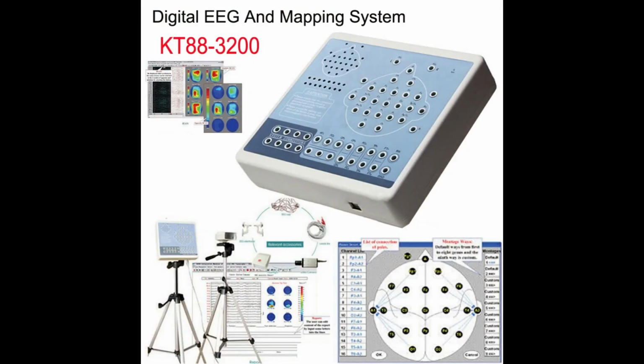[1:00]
This short clip isn't some bizarre computer-generated image, but rather an extraction from a short recording of brain signals. The actual length is extended to demonstrate the detail of these recordings, but the core material remains the same. About 10 seconds of data, gathered non-invasively in contact with the scalp, are sent through a program for data processing, and the result is an approximation of what I'm visualizing. In effect, you are seeing a screen recording from my mind's eye.
Brain-computer interfacing is rapidly becoming a staple in our age, not just as a sci-fi concept. Brain-computer interfacing can be summarized as any non-analog interaction between a computer and one's own mind, typically to solve an existing problem. In this case, it is the processing of an image from the mind into a digital image, which can be shared with others.
The system starts with data acquisition. This is performed through a medical EEG device, namely a KT88-3200. From this, I used 19 data channels as well as a ground and reference electrode.
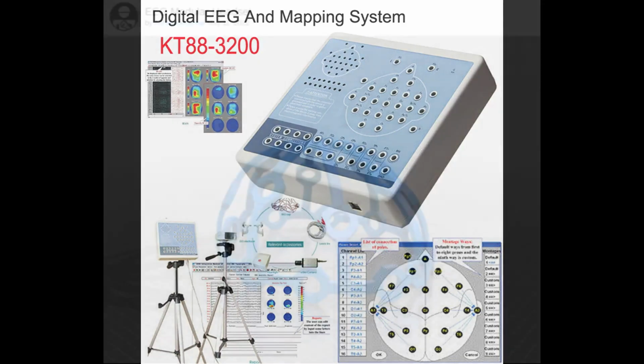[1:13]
These electrodes are held in place using a 3D printed helmet, using a design off of Thingiverse, project file linked in the description, and an adapter of my own design to fit the product I am using with the modular holes. Unfortunately, the helmet becomes a little tight with these adapters, so it is best to pop the back of the helmet so your head can fit. I will likely revise some parts in this design myself, so it works better with these adapters, though, if you would like, I suggest extending the arms at the back piece about 1.5 inches on each side.
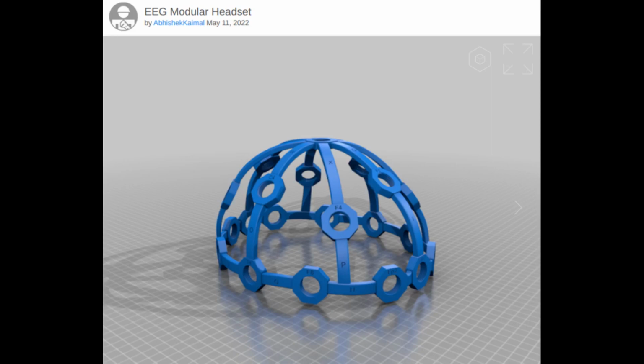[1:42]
Placement of electrodes references the International 10-20 system, the standard for electrode placement, which is typically used for medical screening and diagnosis, though in truth you could likely get away with less constrained placement if you were to record all the data yourself. I will likely be revising placement myself based on findings towards the end of this project.
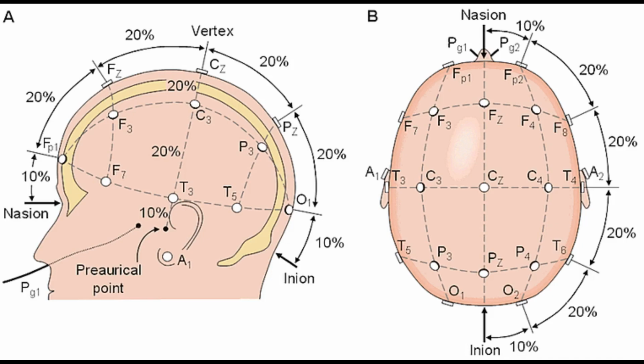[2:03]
On the software end, the technology is largely focused on machine learning to find what data in the signal is relevant to the desired data form. It's a boiling down of the contents before forcing them into the desired form. The subject closes their eyes and holds a target image in their head.
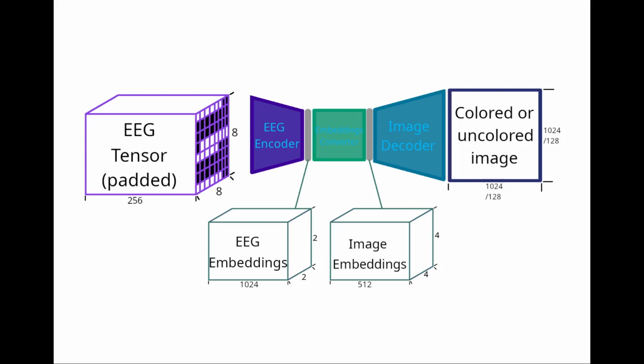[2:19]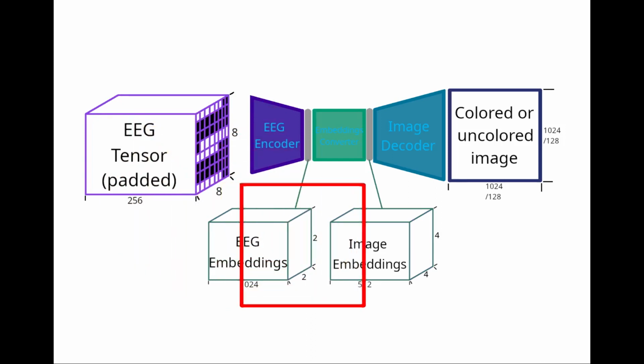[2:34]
The recording is taken, and 512 lines of 19 channels are taken through the system and padded. The data is reduced from a state of 8x8 by 256 down to 2x2 by 1024, then further reorganized for the purpose of representing the data in the form of an image embedding in the size of 4x4 by 512, then finally fed to an image decoder, which represents the data as a 1024 by 1024 3-channel RGB image, or alternatively a 128 by 128 by 1-channel black and white image, depending on the decoder used.
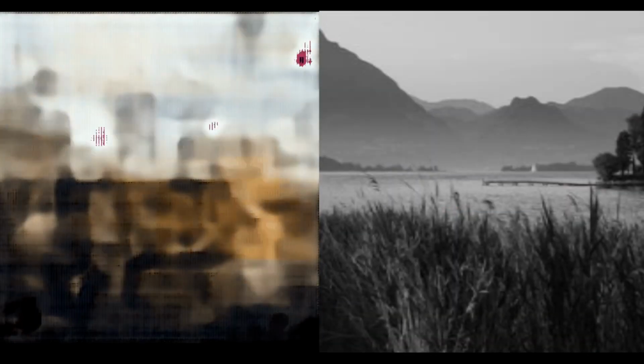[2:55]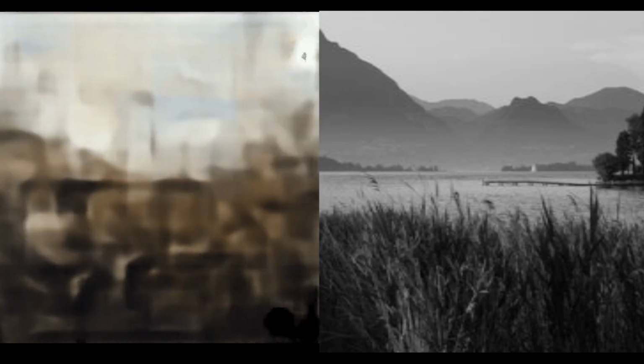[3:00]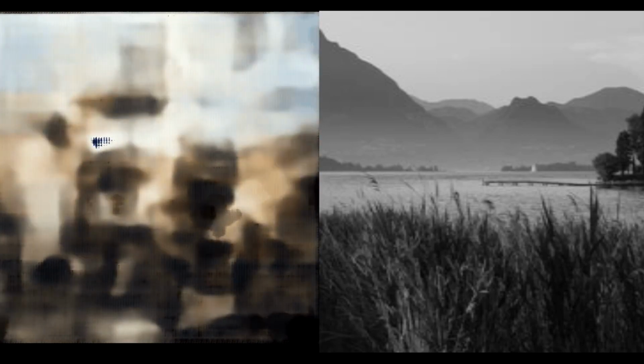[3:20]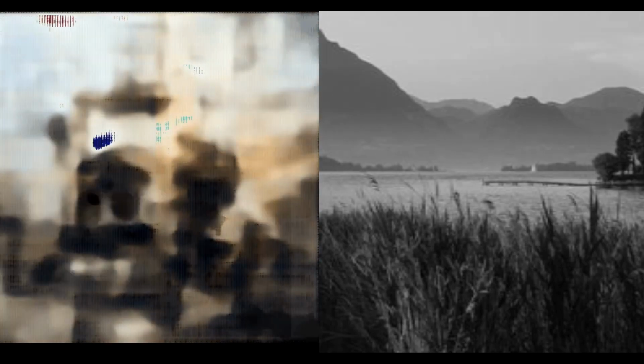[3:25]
Before any data could be extracted, the first major hurdle presented itself. Though there was a proprietary software, and though it could be extracted into a file which holds the data, the software was first and foremost incredibly slow, and the data output was in the form of XDF, or Extensible Data Format, a defunct but apparently still on occasion used data format, which is typically used for n-dimensional arrays. Using the data is possible here, but in the long run I knew that the ability to cast the data directly and have control over its recording was necessary for the project.
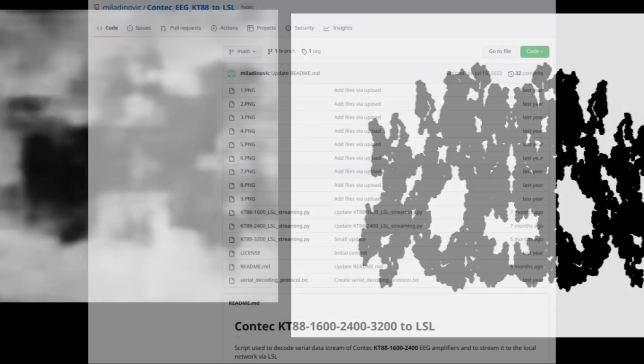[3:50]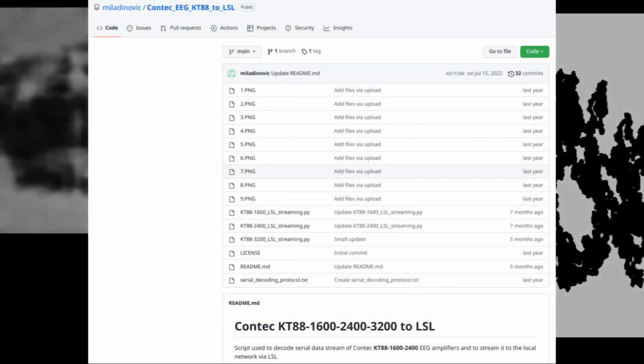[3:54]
So for the first few days I focused on pulling data directly from the device with a custom script. Ultimately, however, the much needed solution was already conducted before me, as this being the cheapest EEG device on the market, someone already hacked the device before me and I was able to use the script as reference for building mine. The reference script is the Lab Streaming Layer compatibility tool by a certain Alexander Miladinovic. His project will also be found in the description.
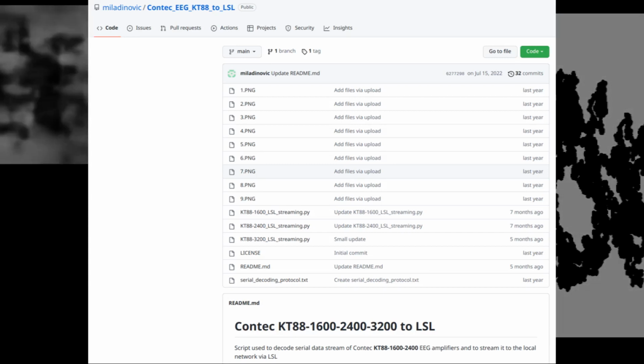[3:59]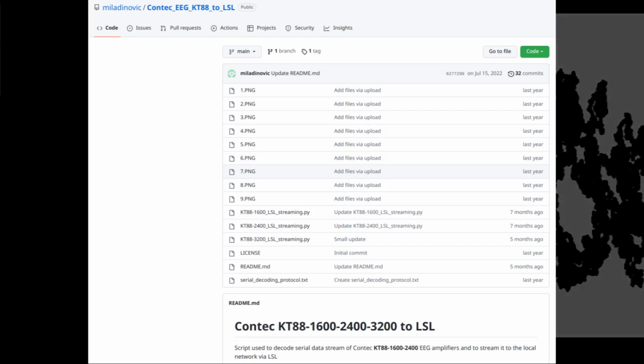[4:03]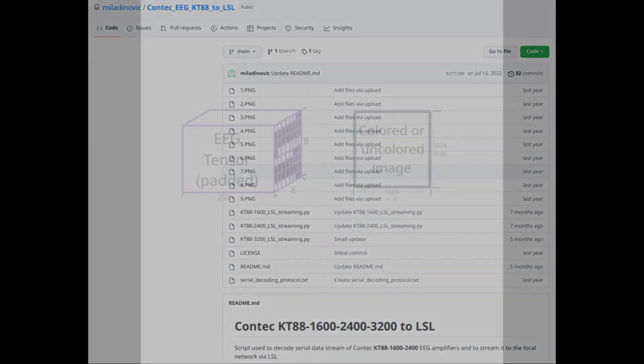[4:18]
The major barrier his work got around is that he found the byte encoding for each channel and identified the subsequent commands that are uploaded to the device, which operate as a serial connection. The company itself kept its trade secret, to my knowledge, so kudos to him for besting the thing. Once able to pull the data, it became entirely my own work in processing it.
Data processing is done first by making recordings for reference later. A major hiccup in the early stabs at this wasn't how I was processing the data, but how I was recording it. I was initially using a Windows PC and had to go away for a bit, but wished to continue, so I got the same script saved to my laptop, and to my utter shock, I went from sampling 10 samples per second to 200 samples per second, which was a huge boon for my purposes.
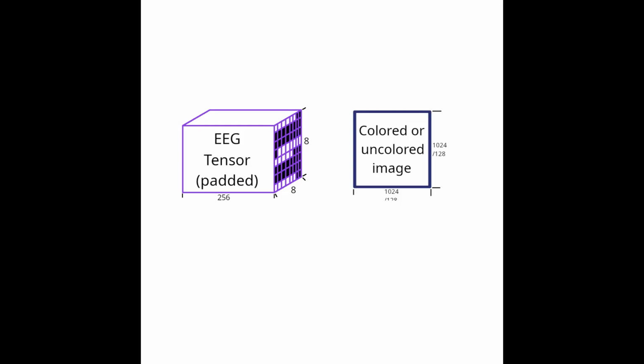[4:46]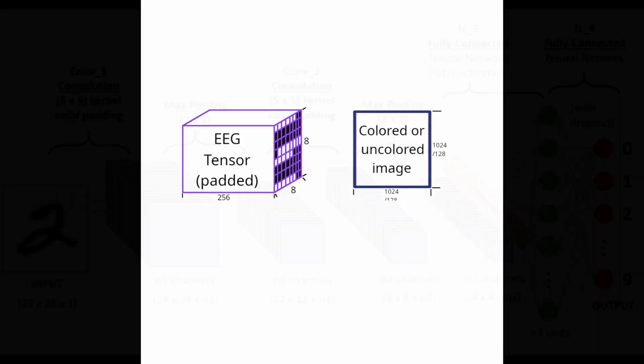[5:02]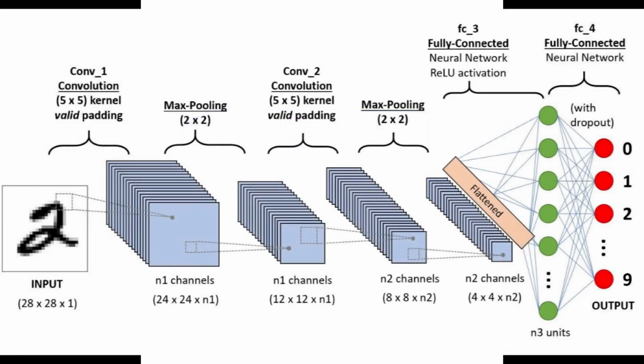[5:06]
For early managing of data, a mean is applied every 2 samples. From here we can lay out the major theory. In a large sampling of rippling at the surface of the brain lies information of visualized images, and there is such a way to link this data to a target image.
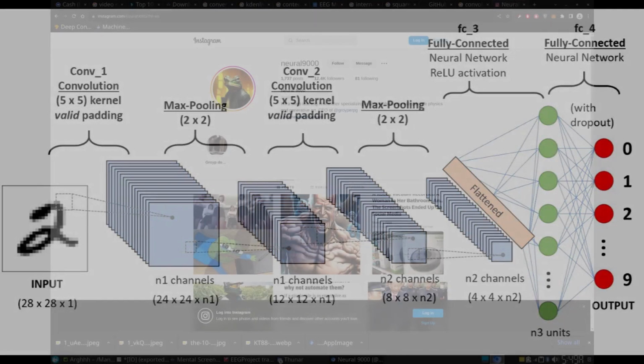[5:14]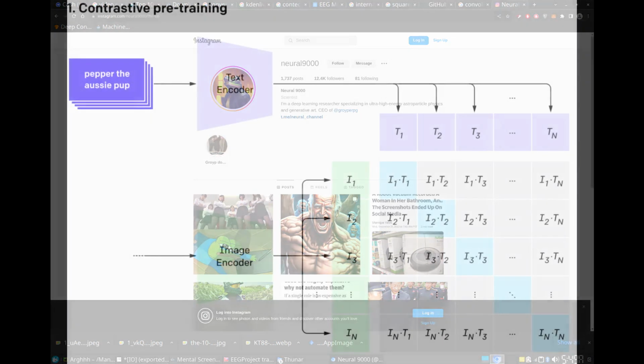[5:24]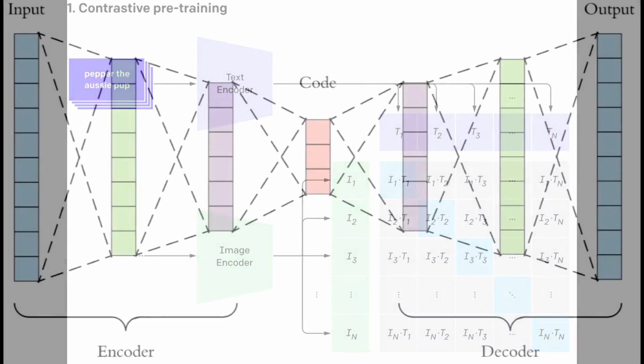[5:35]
My initial step was to take a generative convolutional neural network directly from the data form to the target image. This was less than ideal and gave little but dark blobs on the screen. I had been searching for a breakthrough when I reached out to a page on Instagram, which works on neural networks professionally, for a new perspective, and he put me on the path of instead reducing it down to CLIP embeddings, then using a GAN to reproduce it. While dabbling with that and reading the related papers, I happened upon the breakthrough I needed: autoencoders.
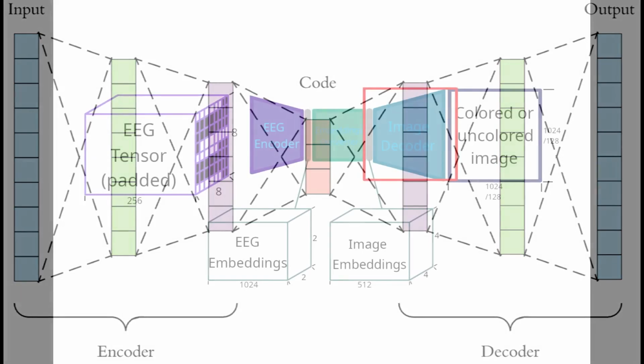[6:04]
Embeddings are, in their essence, a compressed data form, which can be understood by a machine with the right decoding method. Thus, the starting point is autoencoders, a type of convolutional neural network which takes the form of an encoder, which takes the data form and reduces it down to a smaller form called a bottleneck, then the decoder, which takes these embeddings and reproduces the original form. Thus, you have part of the model that will in the end reproduce an image already, the image decoder, which takes a small heap of data and reproduces an image from it, building on a dataset of only unpaired images.
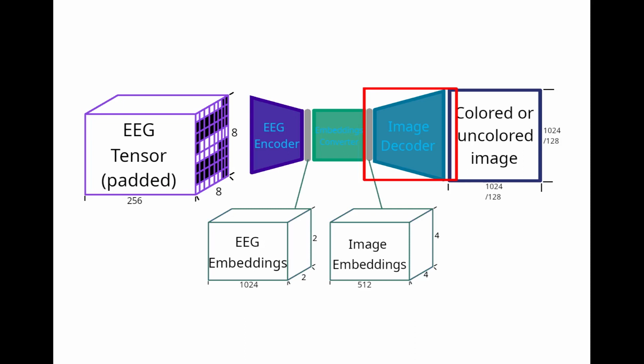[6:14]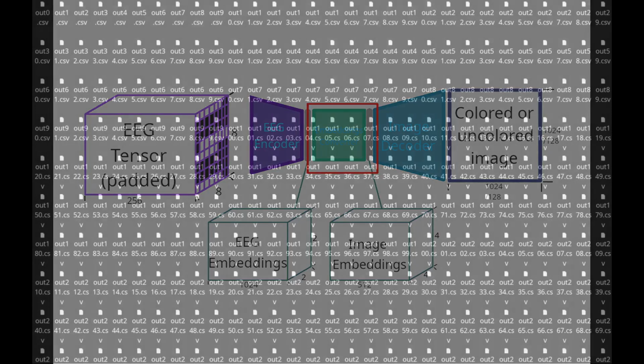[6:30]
The next stage is to do the same with EEG data, a model which reduces it, then reassembles it, then a means of going from the form of one embedding to another, which is the model that can be much smaller and more manageable with a limited dataset. For this, I recorded about 1.667 hours of unpaired EEG data, which I was simply freeform visualizing without a target. From there, I recorded a total of 4.1667 hours of targeted visualization data, where I was given a prompt image, then closed my eyes and held the image in my head. This was used to train the last model, which went from embeddings to embeddings.
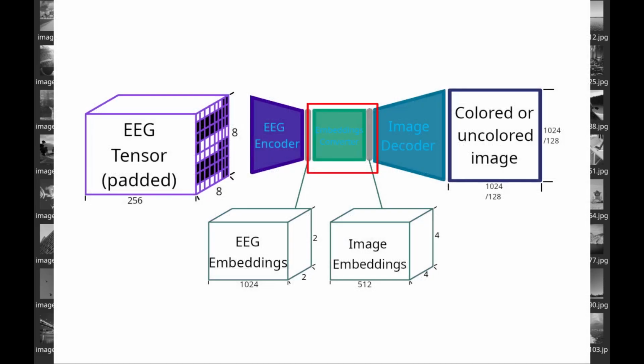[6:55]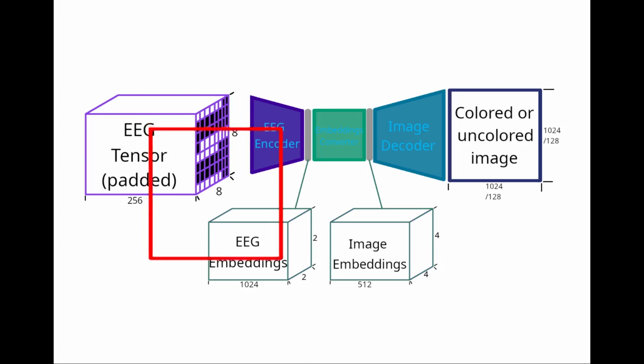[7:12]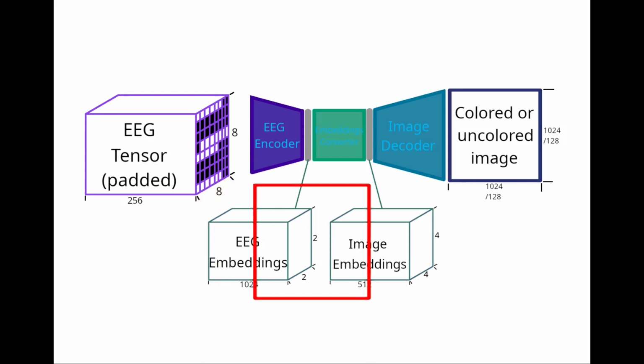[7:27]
The EEG encoder was trained for 20 cycles through the whole data set with the input data from 512 samples, or about 2.5 seconds, of 19 channels, which is then padded into an 8x8 by 256 data form with 2 samples in each 8x8 patch, then convoluted down to 2x2 by 1024, reducing from 9,728 data points to 4096. The image decoder moves from 4x4 by 512 data form, so it is needed in the embedding converter to convolute transpose up to that form.
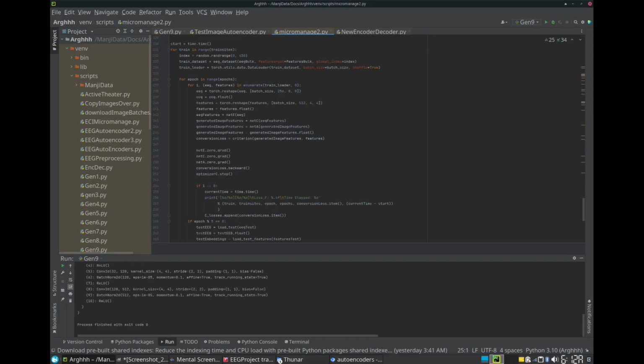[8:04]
Thus, we define the embedding converter as a neural network which takes an input data form of 2x2 by 1024 size, sizes it up to 4x4 by 2048, then implements a hidden layer which sizes it up once more in order to manage all of the connections needed to go from one embedding to the other. Thus, the input is the EEG embeddings, taken by feeding the EEG data to a frozen EEG encoder, taking that and passing it to the embeddings converter, then comparing it to the image embeddings, which we pre-save using the image encoder. From here, the next training script is defined.
What we want is to train both the EEG encoder and the embeddings converter beyond just the baseline. We want the encoder to favor data which corresponds to the image, rather than everything else which may be going on through the mind at the time. So the script trains the encoder and the embeddings converter to take the data from the EEG source all the way to the image embeddings.
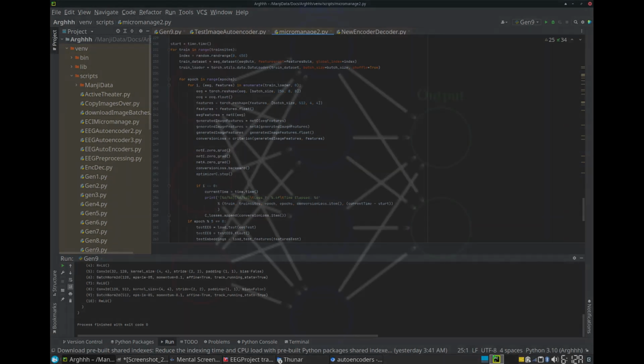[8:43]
One mistake I made early on was not using dropouts. The power of dropouts is that it convinces the network that it can't always trust nodes for data because it has a small chance it is set to 0 by default. So it instead forms an excess of connections both ways to compensate for its uncertainty.
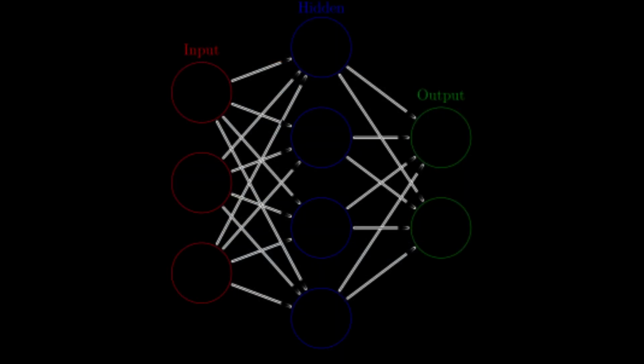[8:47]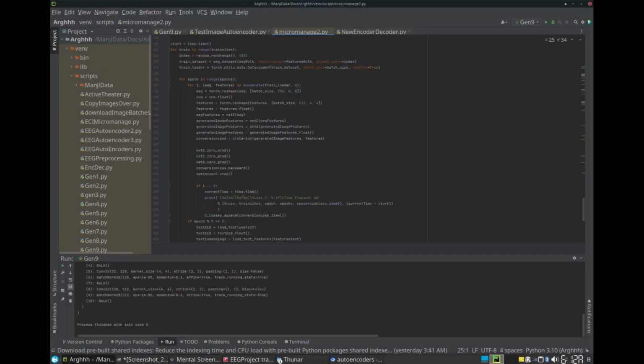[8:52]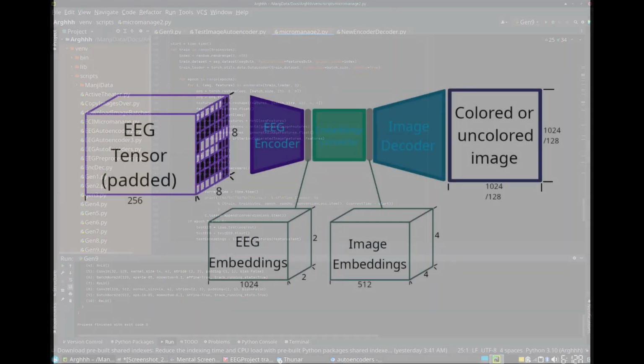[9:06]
The majority of the time training for the system was spent on the accurately named micromanage script, which was responsible for overseeing the filtering and structuring of data from start to finish, and by the time of recording, it had been run for 100 cycles through the data. The data can then be taken from start to finish by first sending it through the EEG encoder, then the embeddings converter, and finally the image decoder, which I made both a 128 by 128 monochromatic form and a 1024 by 1024 RGB form, both using the same embeddings.
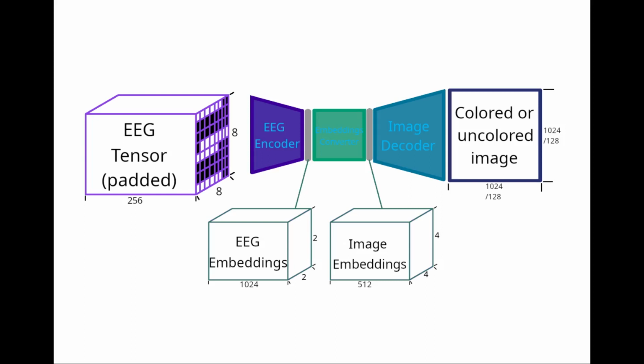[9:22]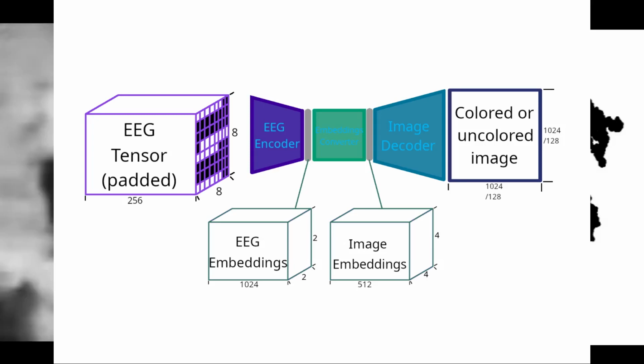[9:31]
The 128 by 128 monochromatic favors speed and is less prone to lessons on the images, but the RGB decoder grants a lot clearer images most of the time. So this whole project was a headache and a half, and I likely neared losing my mind a few times during the investment into it.
So the natural question is, why? What use is a machine that can see what you visualize? Well, there are several applications which present themselves, aside from being fascinated with the work of the psychologist Jung and his concept of active imagining, which could be recorded with a more refined form of the system. It also acts as a form of media creation, or simply quick rendering of references for art.
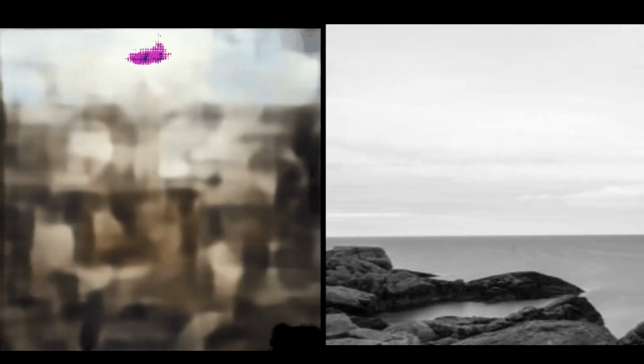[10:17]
But in truth, my interest lies a little deeper than that. As those from my Instagram page, total_desolation, well know, I have a bit of a fascination with recording dreams in the form of written descriptions. This has never sat right with me, so I define the artist dilemma. One is made to watch and perceive a visionary world with the audience of one. The desire is to show others, tell them of this world, but no medium truly replicates it. So my goal in starting this project has truly been the pursuit of a device which will record dreams.
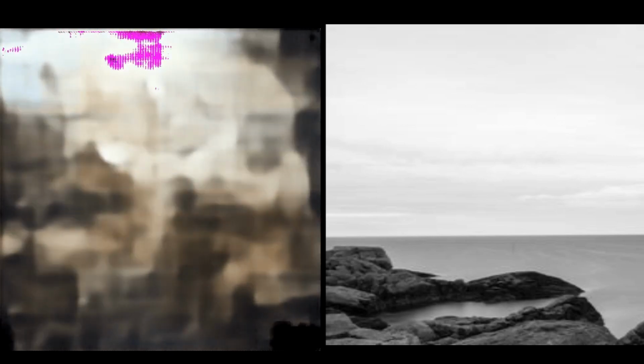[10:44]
The recording of visualized images is the first step. Moving forward, there are several flaws which I can address. The first that comes to mind is the phenomenon of focus-based cropping. The reference images actually have some border which is cropped out in the image generated from the recording. This indicates the system's tendency to cut the uncertain borders, and though I don't know for certain if it originates in the brain or the system, I do have a solution.
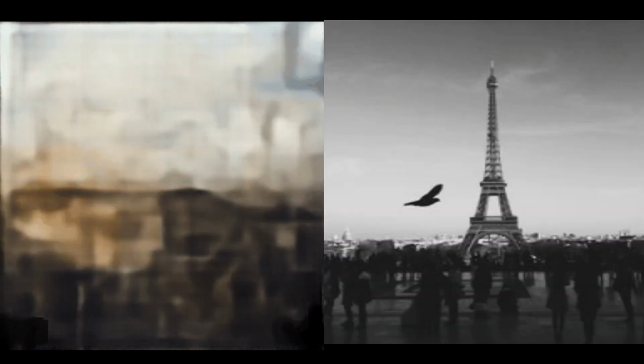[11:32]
As it does crop the uncertainty, the solution would be to pre-crop training data based on where attention is placed on the image. It just so happens that while I visualize the images, I tend to move my eyes around the image in my mind, and this does take the form of rolling beneath my eyelids. While it is happening, there also happens to be a device recording the electrical activity a small distance above my eyes. In the International 10-20 system, two electrodes are often used to detect rapid eye movement, which I do include in the recordings. Thus, I can detect where the eyes are focused by linking those electrodes to a much smaller system of eye tracking. Then the script would crop the image accordingly prior to the image embedding being taken.
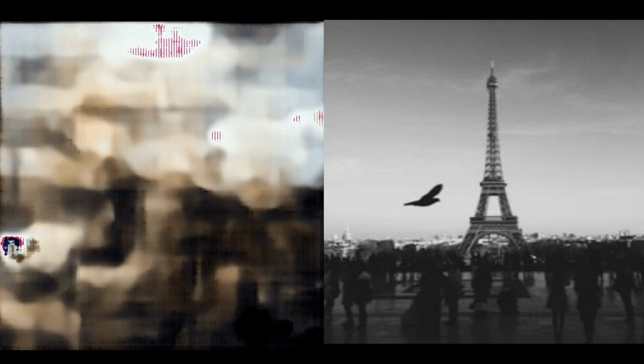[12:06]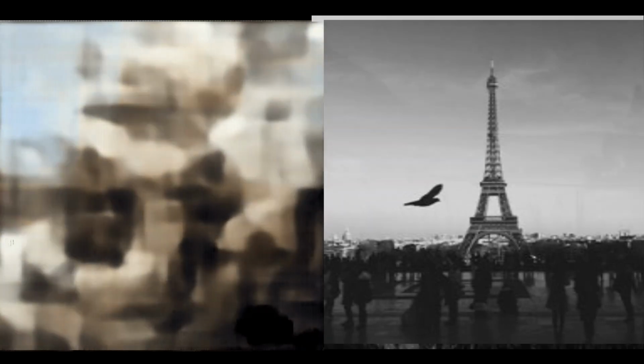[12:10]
Now, one more limitation I've had is the computer I'm using. I likely cannot pull off the system in any reasonable timeline, simply because training neural networks is such a slog on resources. Technology is advancing the field of training neural networks, so an investment in a computer that can handle that kind of demand, as well as the demand of a model that is larger and more robust, is necessary if I want to reach the point of recording dreams, which will include both video and audio.
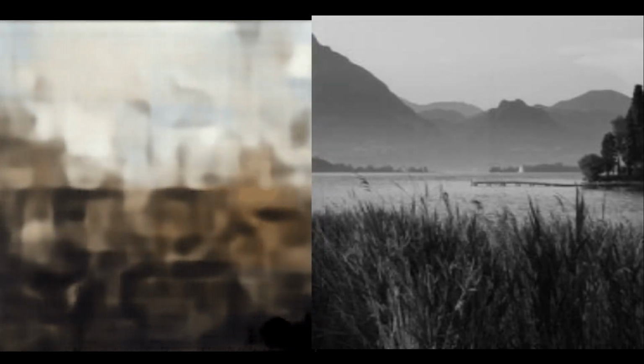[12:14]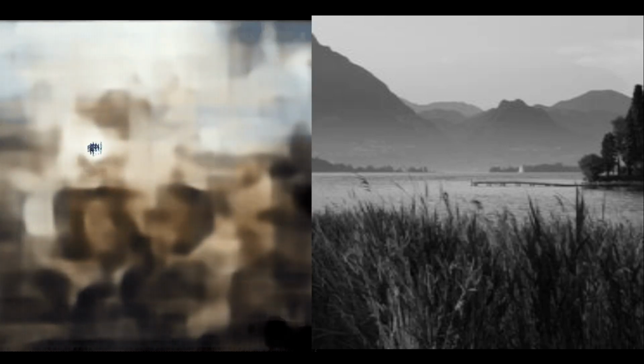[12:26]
Furthermore, there are major hardware upgrades I can make to the system itself, which could make a reasonable product. Perhaps you, too, will one day be able to record your dreams simply by plugging in a device and wearing a cap to sleep. This approach operates as not only the niche use case of recording visualized images, but also other data forms, such as audio. I've not yet built such a system, but it is on my list, as well as one that simply uses one's eyes as a camera, simply because it can be useful later.
Hey, I have one more treat for you. I was asked recently why use the whole brain as a reference when the visual cortex is central to seeing. I answered originally with the fact that it's a distributed process and touches multiple regions, starting wherever consciousness resides, then being drawn out from the darkness by the parietal lobe, processed by the visual cortex before finally being sent to the conscious attention. But the question got to me, wondering about where the system was actually getting the data.
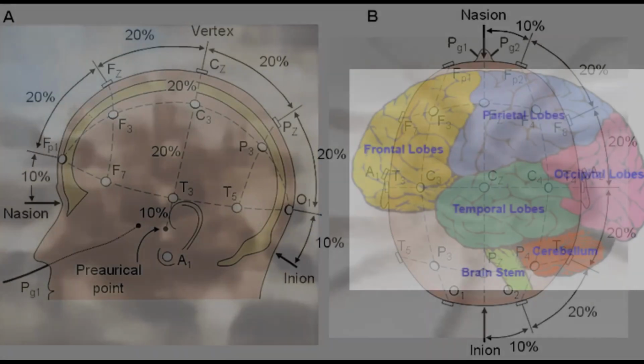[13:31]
So I referenced the International 10-20 system and a map of the brain to identify which electrodes corresponded to each major lobe of the brain, and selectively eliminated lobes to determine which was the most important to the output by comparing the results of the same sample being sent through with different regions blocked. I was shocked to find the frontal lobe was a far greater source of the data than the parietal lobe and the occipital lobe combined, with the temporal lobe offering little to no usable data. Thus, from this information, we can conclude that the frontal lobe is more important than any other part of the brain in generating or observing a visualized image.